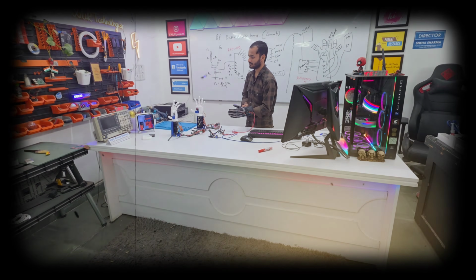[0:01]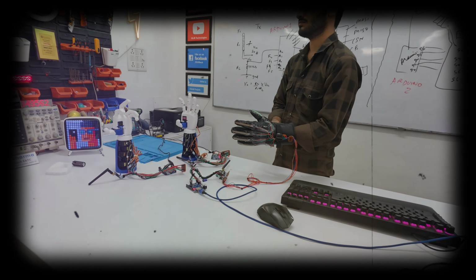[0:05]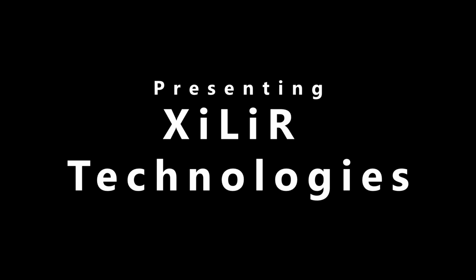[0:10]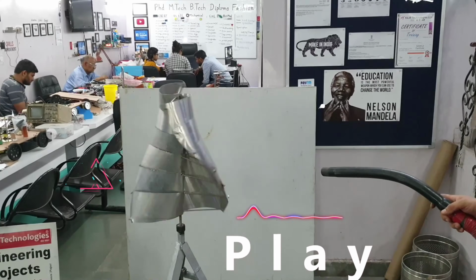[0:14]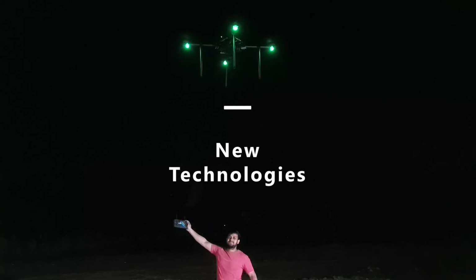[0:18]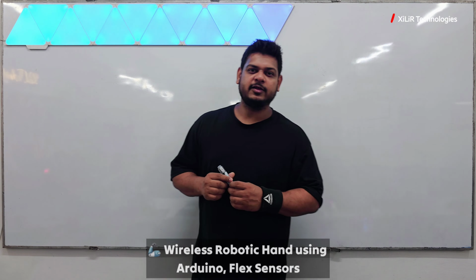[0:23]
Begin.
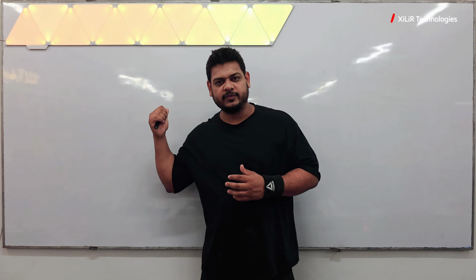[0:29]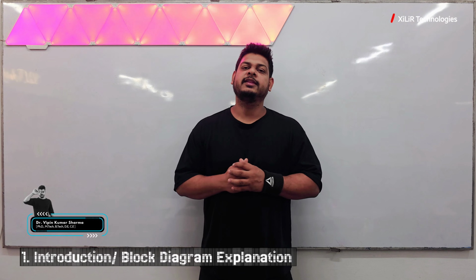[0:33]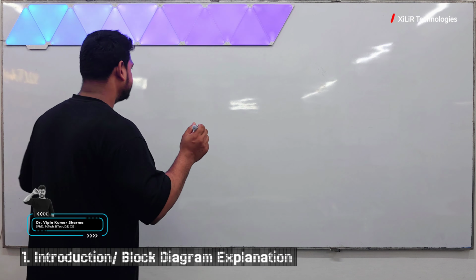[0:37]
Today we are going to demonstrate a project named Wireless Advanced Robotic Hand. I will explain the block diagram of the project, circuit diagram, component explanation, output of the project, and then the code. Now let's start with the block diagram.
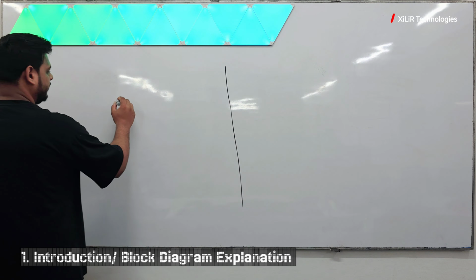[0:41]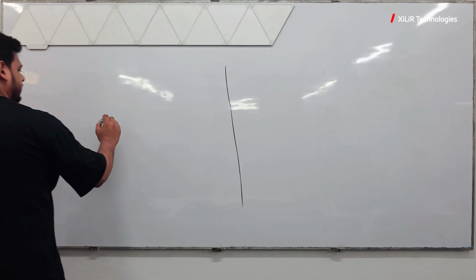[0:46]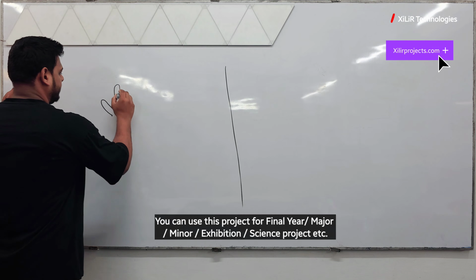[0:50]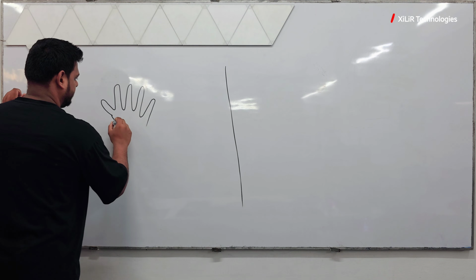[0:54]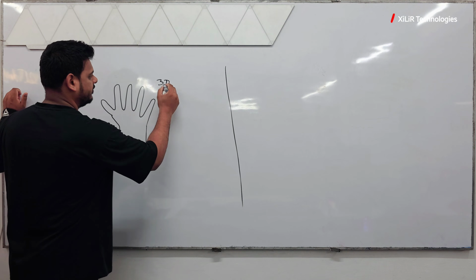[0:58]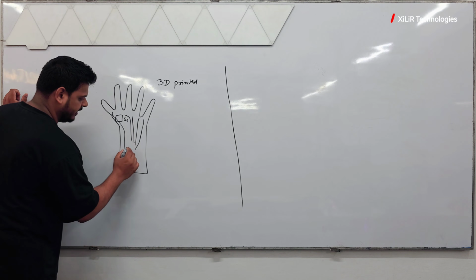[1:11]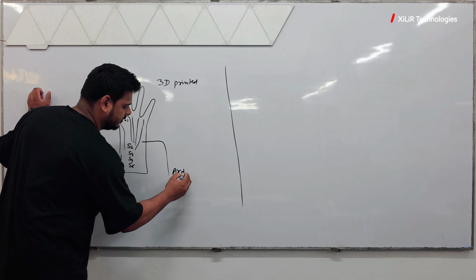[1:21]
In the block diagram, we have two parts here. One is your hand. One robotic hand will be there like this, and this will be 3D printed. One thumb movement motor will be here, servo motor number 1, and these will be connected with wires: 1, 2, 3, 4, 5, and servo motors here S2, S3, S4, and S5. This will be connected with an Arduino, these wires. You can use any other microcontroller.
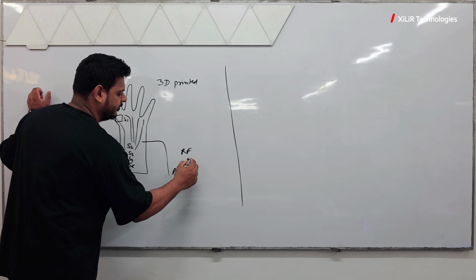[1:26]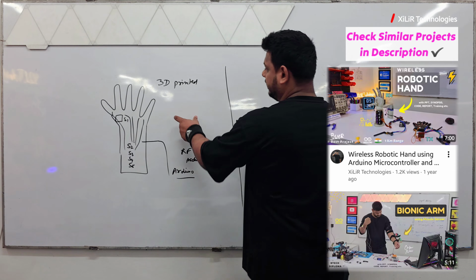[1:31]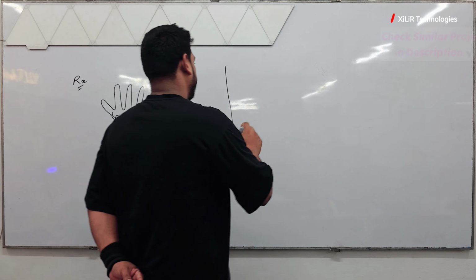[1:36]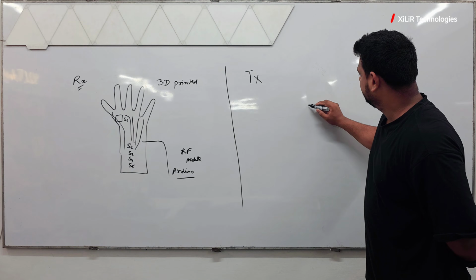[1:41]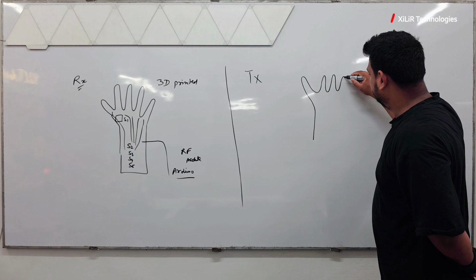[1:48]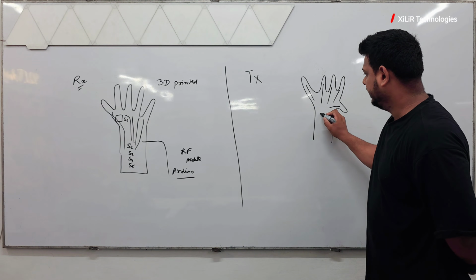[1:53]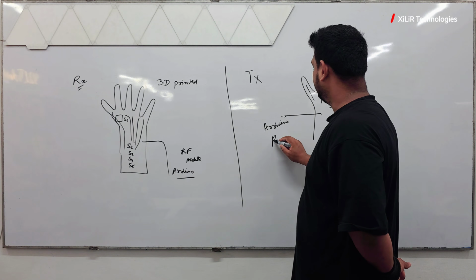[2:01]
An RF module will be used here. This side is the receiver part, so I'm writing RF here, and this is the transmitter part. Here we will have a flex sensor, also known as a bend sensor, and there will be gloves, and on the gloves they will be mounted: flex sensor 1, 2, 3, 4, 5. The output will be given to the Arduino microcontroller. All these will be connected to the Arduino, and again an RF module will be there.
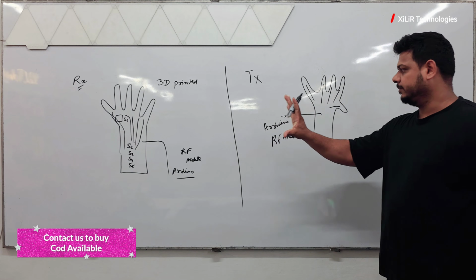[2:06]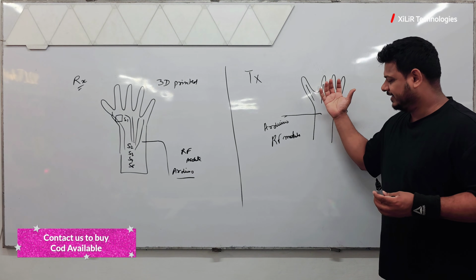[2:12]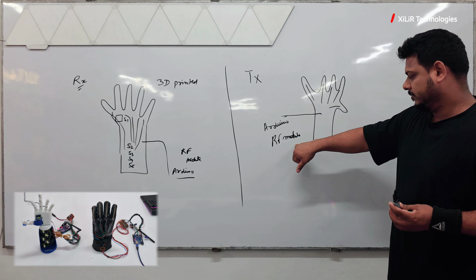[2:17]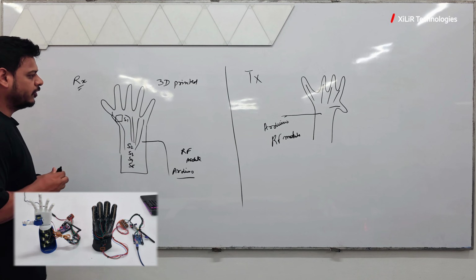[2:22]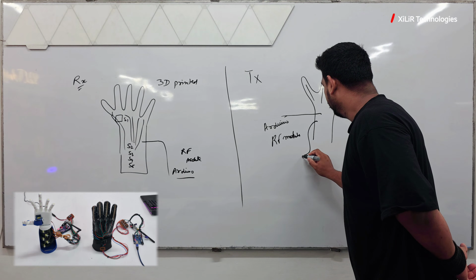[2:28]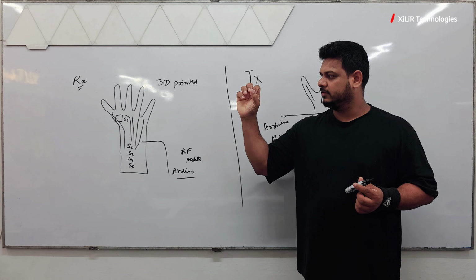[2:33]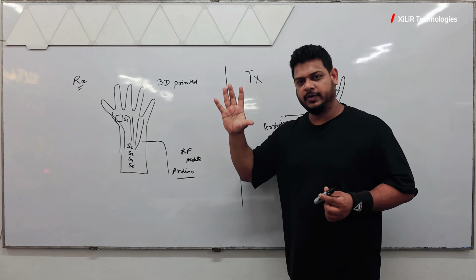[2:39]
Before the circuit diagram, let's get the basic idea. Here one hand will be moved like this. It will create some logic, like the bend sensor moving like this, and it goes to the Arduino microcontroller and RF module. We will receive the signal on the receiver side, and accordingly the motor will move. One more thing, a button has also been added here for thumb movement. One movement is like this, where all fingers move, and this is one of the movements. This is the block diagram of the project.
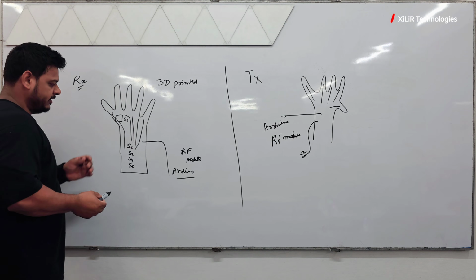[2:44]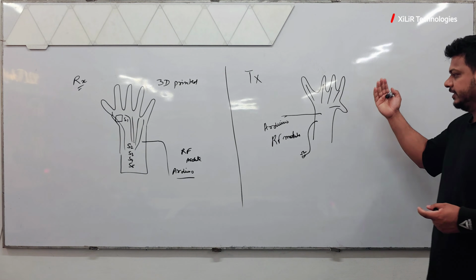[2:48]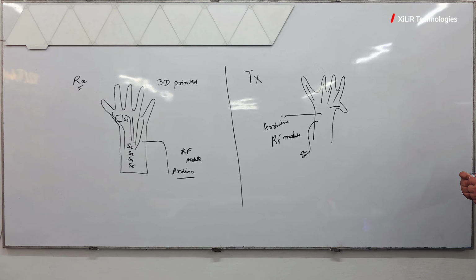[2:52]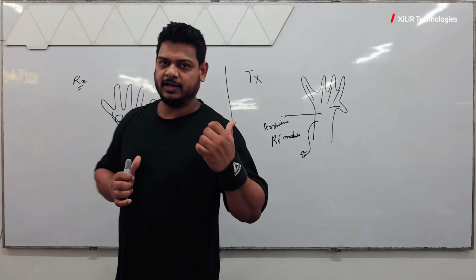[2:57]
These are the components connected: servo motors, then the 3D printed module, then the bend sensors, flex sensors. So these are the things. Now we will create the circuit diagram to show how things are connected together.
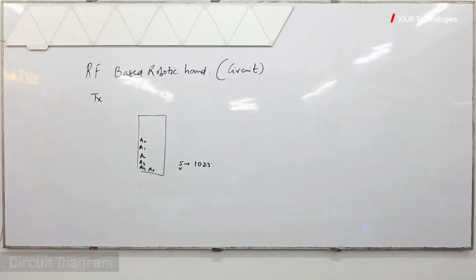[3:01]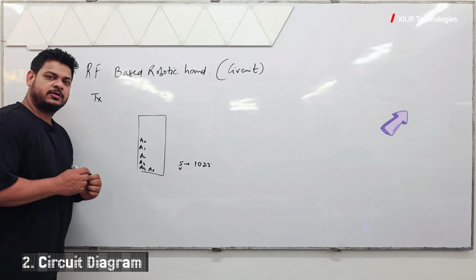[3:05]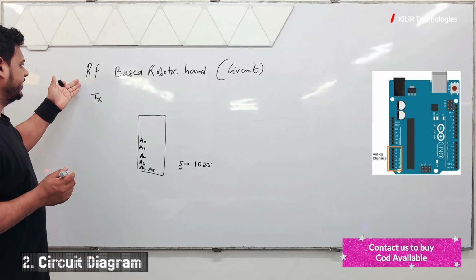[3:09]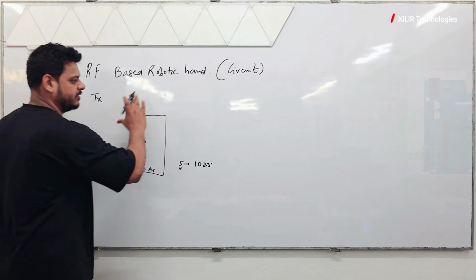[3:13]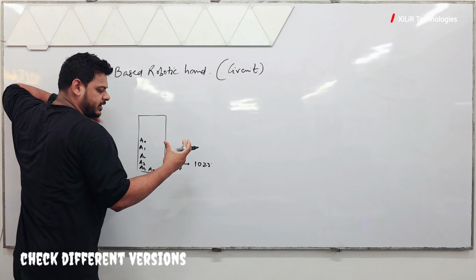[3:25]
Now let's see the circuit diagram of the project. I have written here RF based robotic hand circuit diagram. This is the transmitter part; on the receiver side we will make another diagram. This is your Arduino microcontroller. A0 to A5 are the ADC pins. ADC pin means if we give 5 volts, it will convert it into 1023 discrete values, because it's a 10-bit microcontroller.
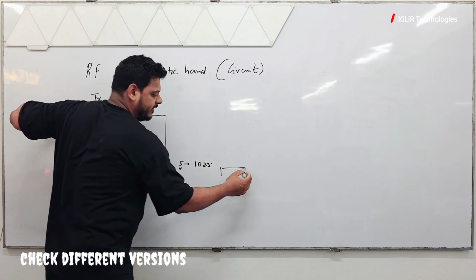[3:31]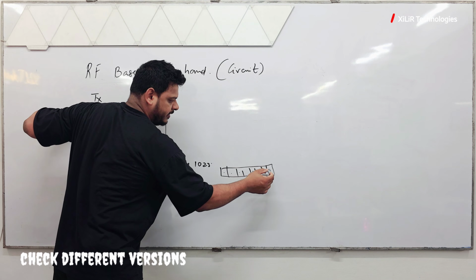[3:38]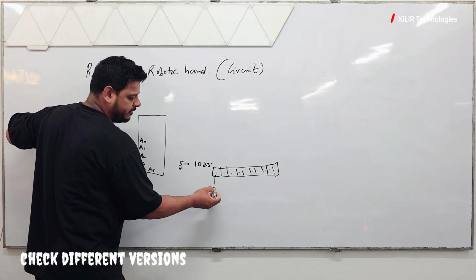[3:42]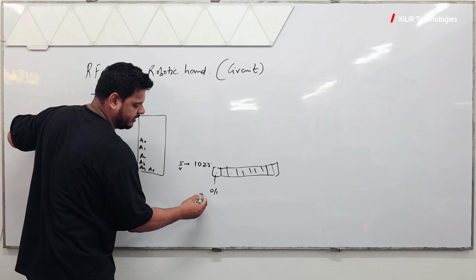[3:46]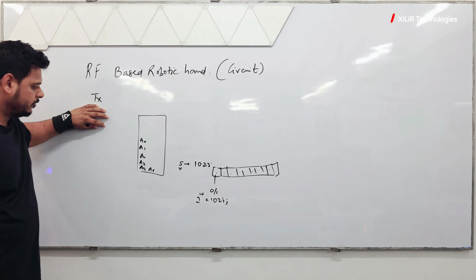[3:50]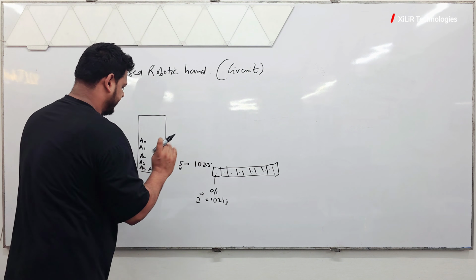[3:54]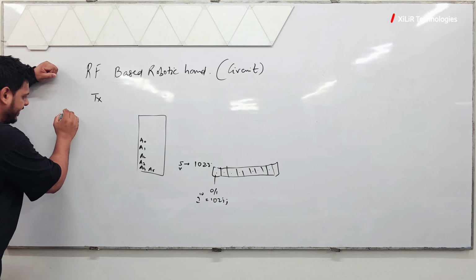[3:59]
10-bit means it has a register of 10 bits: 1, 2, 3, 4, 5, 6, 7, 8, 9, and 10. Every bit can hold two values, 0 or 1. So we have 10 bits, so 2 to the power 10 is 1024, that is 1023 if we include 0. Whatever voltage value you give here, it will be converted to this discrete value.
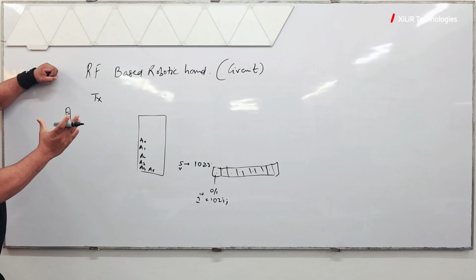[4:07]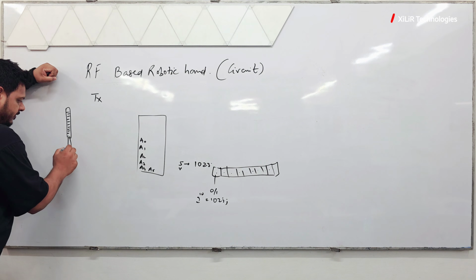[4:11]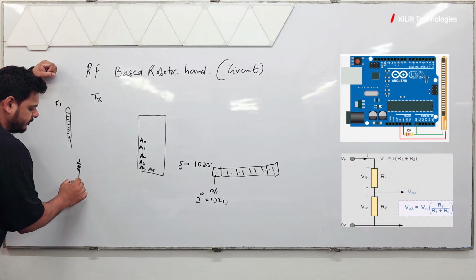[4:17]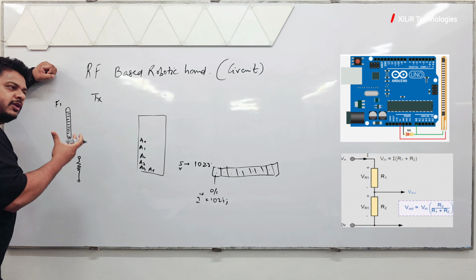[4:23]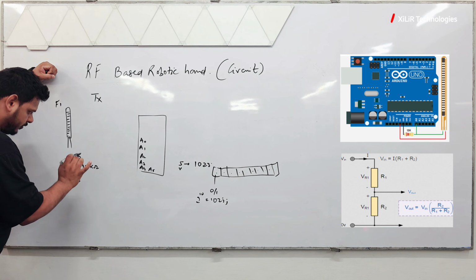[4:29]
We have a bend sensor here. This is one flex sensor I am drawing. This flex sensor is a changeable resistance, you can say a variable resistance. Then we have to connect one resistance to create a voltage between them, so it is also known as a voltage divider circuit. We have a 10 kilo resistance; you can use 1 kilo or 10 kilo here. Connect that resistance to this, and think of the flex sensor as a variable resistance. To this pin you can give 5 volts, and to this pin ground. Here will be the output, which will be connected to A0.
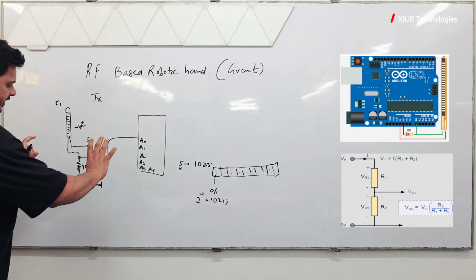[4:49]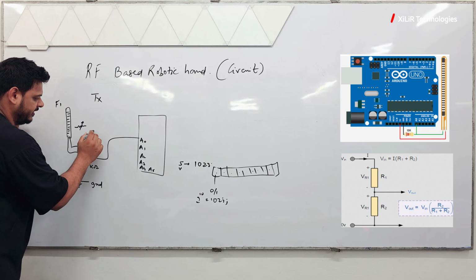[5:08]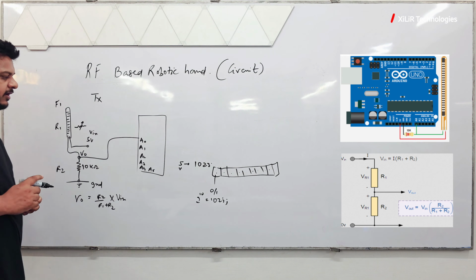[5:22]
Now what will happen if you bend this finger? This resistance will change, and the change in resistance will create a voltage variation here. The formula for it is like this: I am marking V0 and this is Vin, this is R2 and this is R1. So V0 equals R2 divided by R1 plus R2, into Vin. So a different voltage will be generated here.
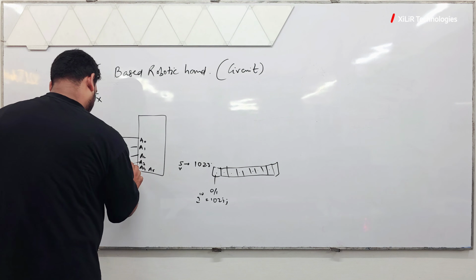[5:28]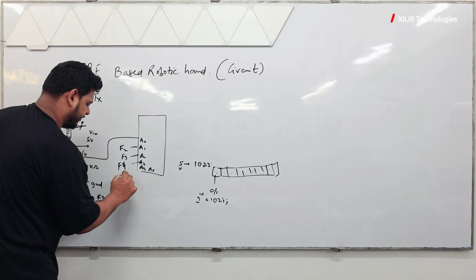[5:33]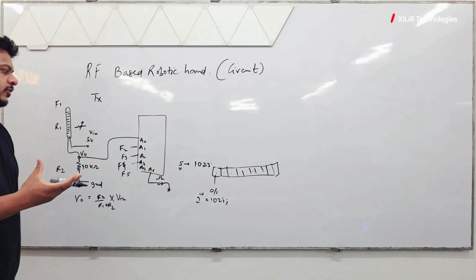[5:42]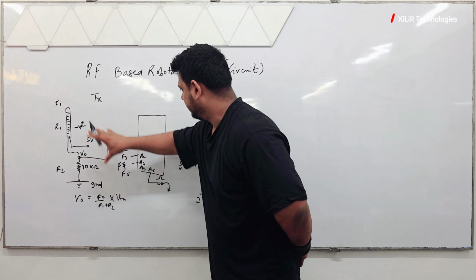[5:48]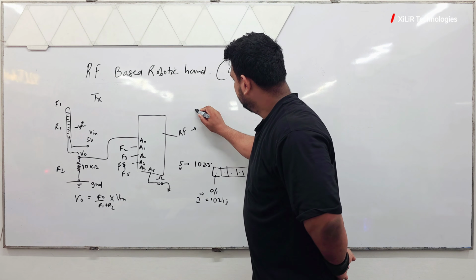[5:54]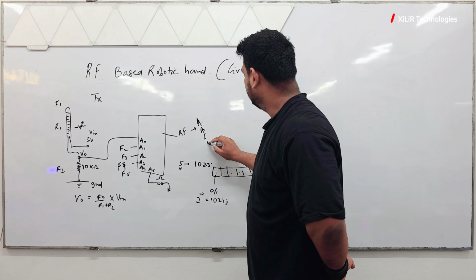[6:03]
In the same way there are five sensors here: F1, F2, F3, F4 and F5. One button is also used here. If you press that button, one more signal will be generated. Assume you bend one finger; through the RF module some commands will be sent, like A0, or just name them A, B, different commands. These commands will be received on the receiver side: A, B, C, D, E, F.
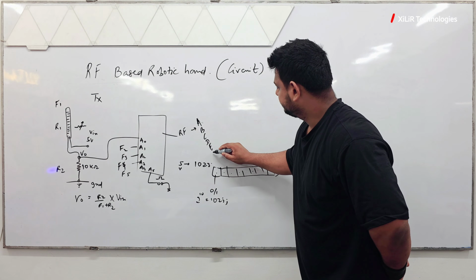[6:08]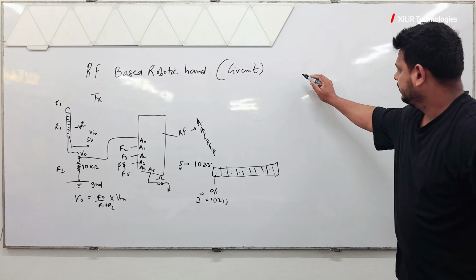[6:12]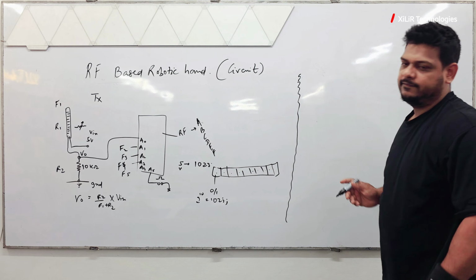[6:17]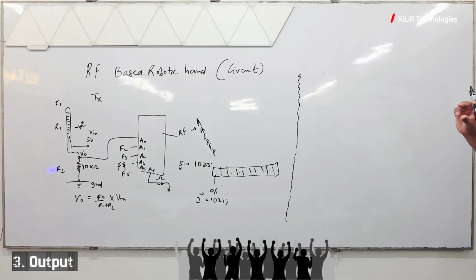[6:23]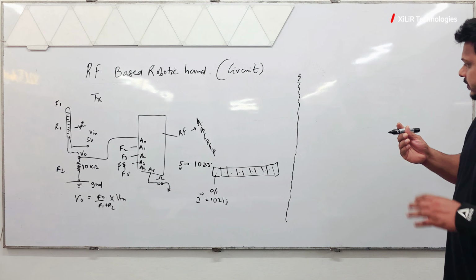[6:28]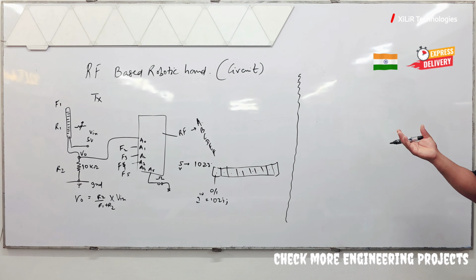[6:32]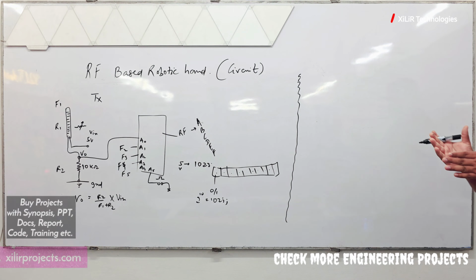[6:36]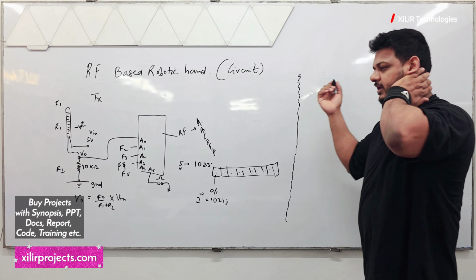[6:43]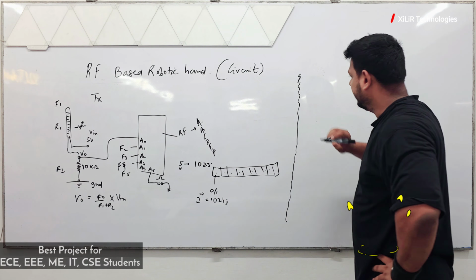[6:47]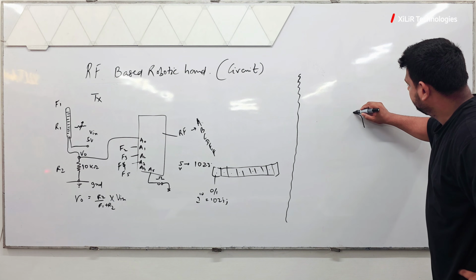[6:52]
Now on the receiver side we will have motors, which are servo motors. You can use small servo motors also, but I would prefer you use the bigger ones, so that you get better torque for bending the fingers. Otherwise they won't be able to do that task, and the gears will also slip. You can also use metal gear, which is better, but don't go with a very costly one. A normal one is fine; a 500 or 800 rupee motor is good enough. Here we have this 3D printed model, like this.
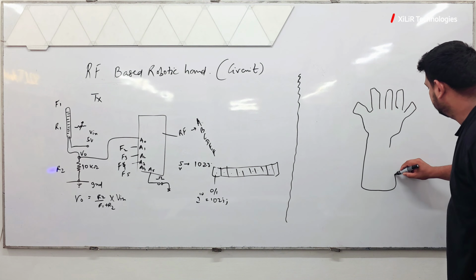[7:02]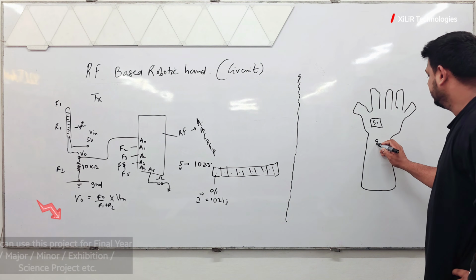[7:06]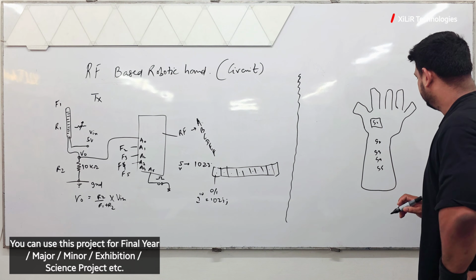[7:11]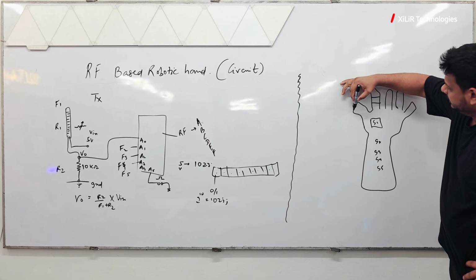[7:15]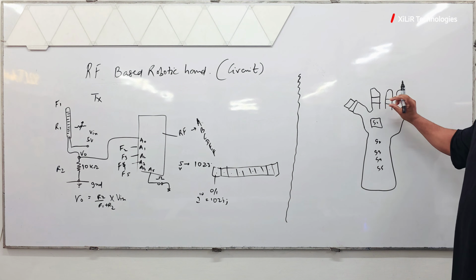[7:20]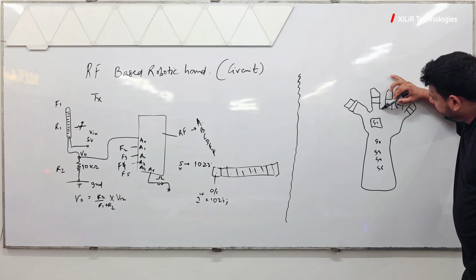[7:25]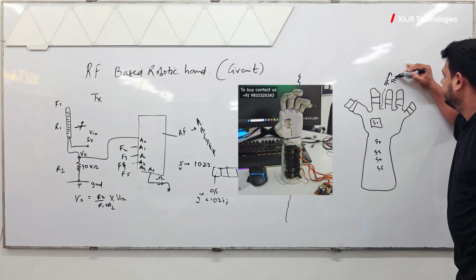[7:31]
Okay, and slot for servo motors S2, S3, S4, S5. Each finger has 3 modules for bending. 3 plastic modules are there again here. What we have to do is add one spring here, I can name it spring thread. So it will be stretched, like if you put the thread here, it will be stretched.
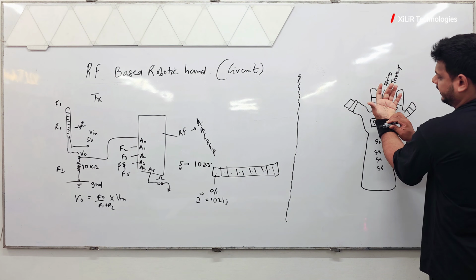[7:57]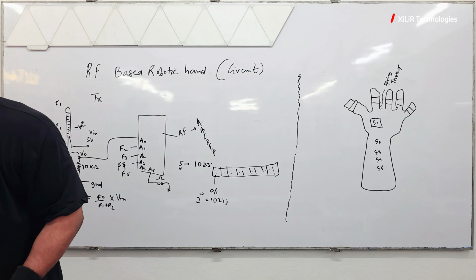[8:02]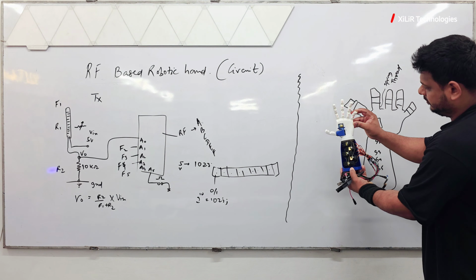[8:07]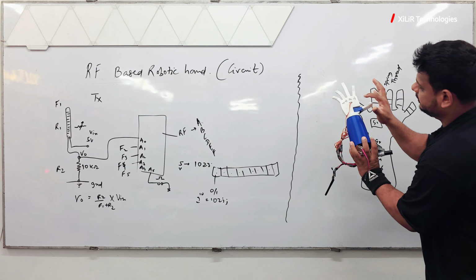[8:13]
Now you need one more thread, so the servo motor can move it. If you use the servo motor, it will bend like this, and it will bend like this. The spring will maintain this part. It will be straight, and this servo motor will be like this. This servo motor will be like this, and this servo motor will help like this. So this way. Let me show you. It will be like this. These motors will help in moving the fingers, and here the threads are the springy threads.
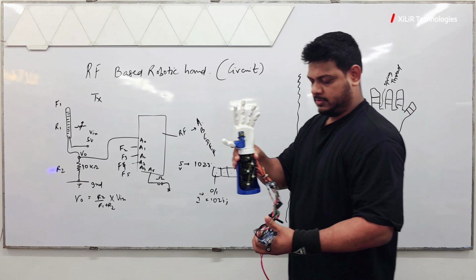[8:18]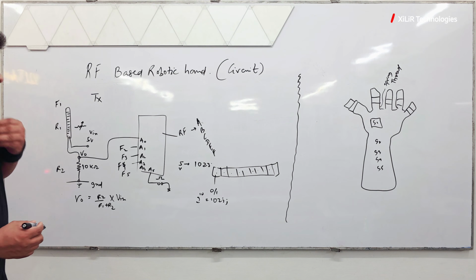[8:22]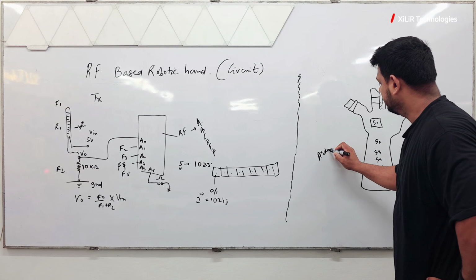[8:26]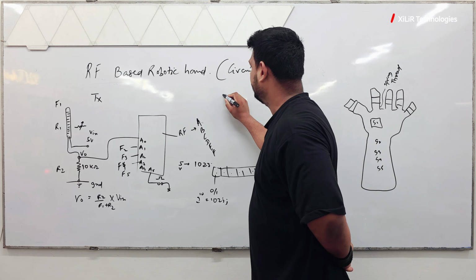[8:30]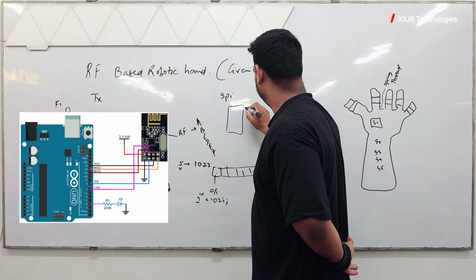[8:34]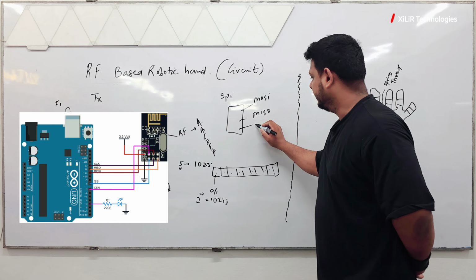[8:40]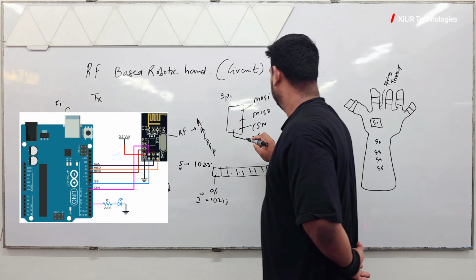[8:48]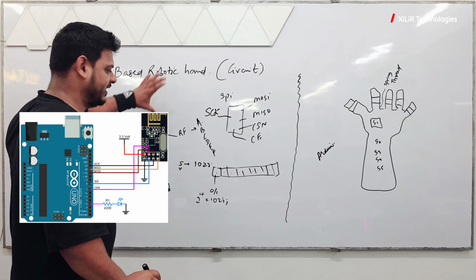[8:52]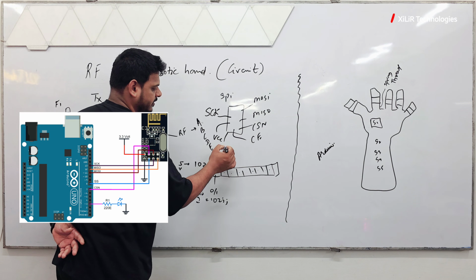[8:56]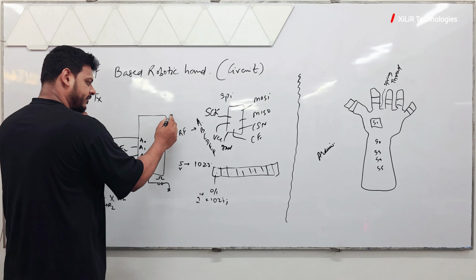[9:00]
Okay, so now let's see further. Here also Arduino is here, and NRF, remember, it will be connected through the SPI protocol. The NRF module has some connections: MOSI, MISO, then we have CSN, CE, SCK. I will add the picture. Then we have VCC and ground. So it's a complex one. You have to connect Arduino. Arduino has specific SPI pins here, so you have to connect it directly.
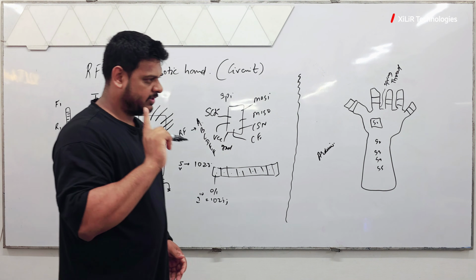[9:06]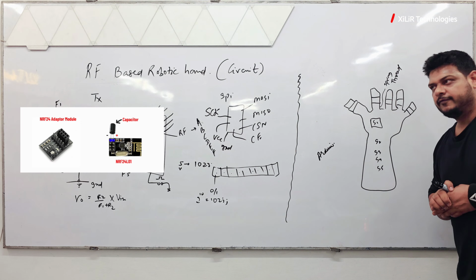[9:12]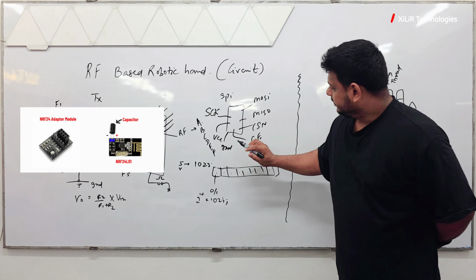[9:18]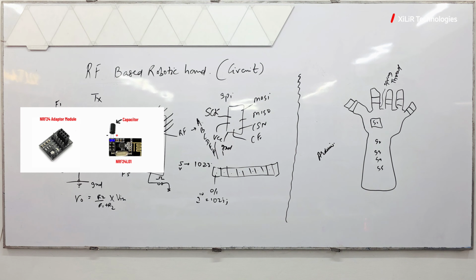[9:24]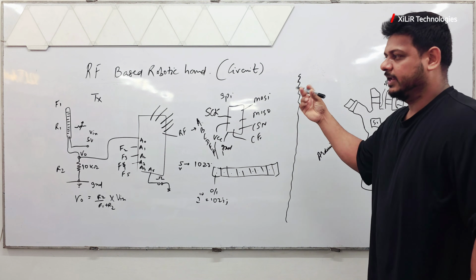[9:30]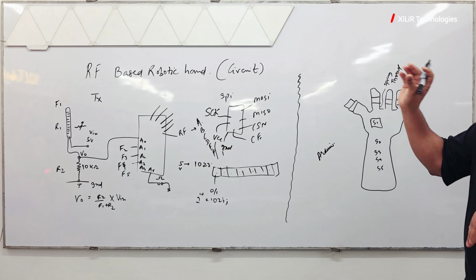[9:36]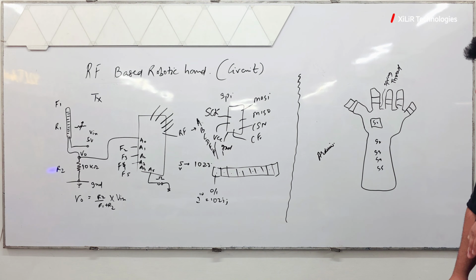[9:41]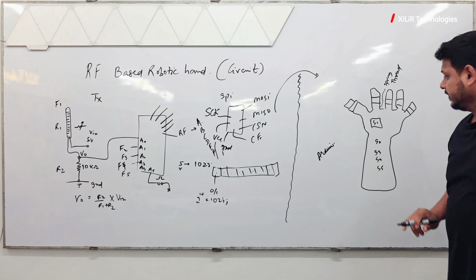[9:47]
And where you will fail, let me tell you, that is the important part. You have to give proper power supply to the module. You have to use a 10 microfarad or 47 microfarad or 1000 microfarad capacitor in between these. Remember this thing, this is a very important part. Otherwise it won't be stable and the signal won't be received. And use a similar pair. Don't use 100 meters and then 1 kilometer, different versions, when you are switching. Use the similar type. Buy from one place two similar modules, so that only then will they communicate with each other. Same copy paste here. Same thing. And then Arduino again.
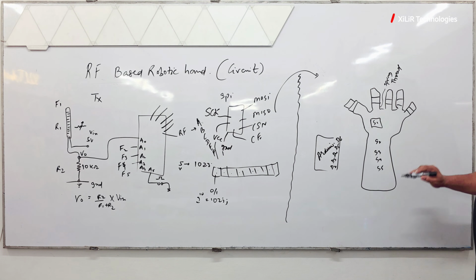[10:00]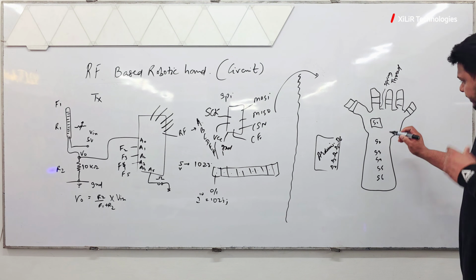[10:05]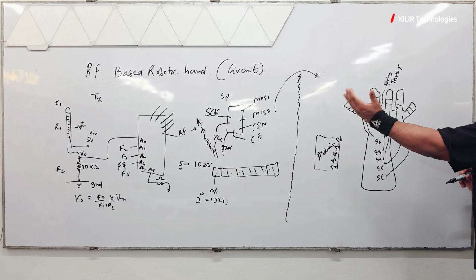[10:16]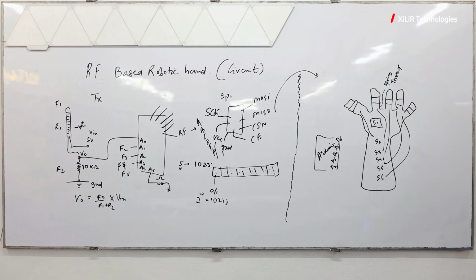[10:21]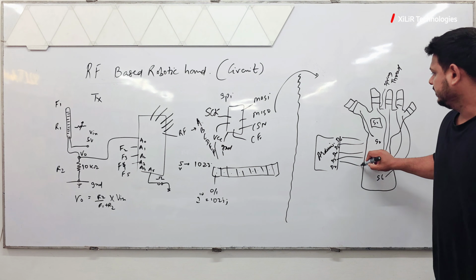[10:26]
From D2, D3, D4, D5, and D6, because here we have 6 servo motors: S1, S2, S3, S4, S5, S6. So this will control this finger. This will control this finger. This will control this finger. This thread I'm marking. And whenever we receive the signal, things will work. Okay, like this. And then let's connect like this. NRF on here.
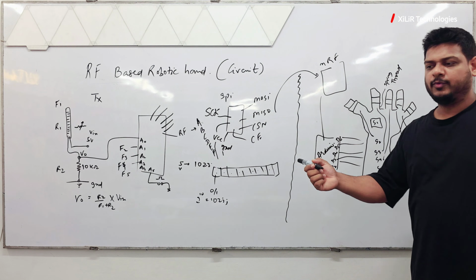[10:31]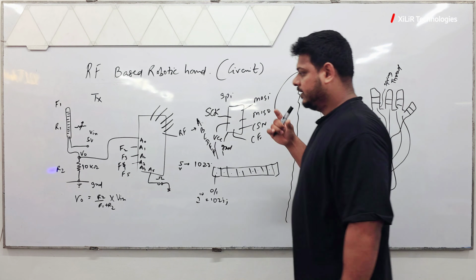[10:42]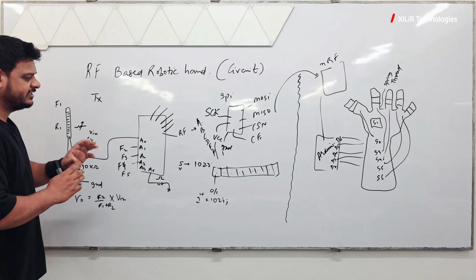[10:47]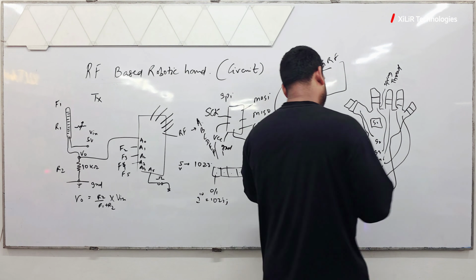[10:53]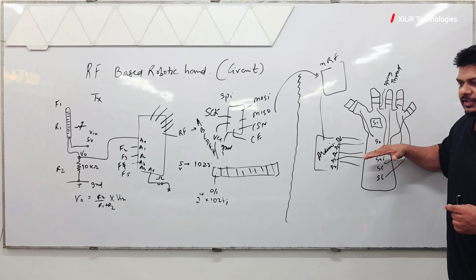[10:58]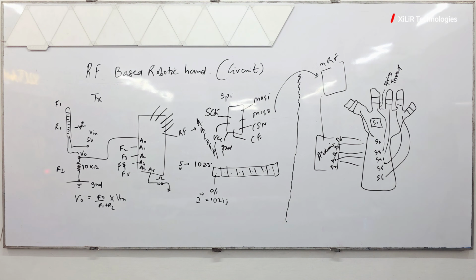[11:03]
NRF, RF module, Bluetooth, LoRaWAN module, Zigbee, any wireless module you can use. Now you know the concept of how to communicate with each other. And this is the important part: the flex sensor. You have to create one voltage divider circuit so that the voltage is divided. Through that voltage change we will receive a reading here, and through that we will know that the finger is pressed, and when the finger is pressed, we will receive output here. In the code we have written, if A is received, just rotate the servo motor 90 degrees. If we move like this, the finger will bend. Now everything is clear.
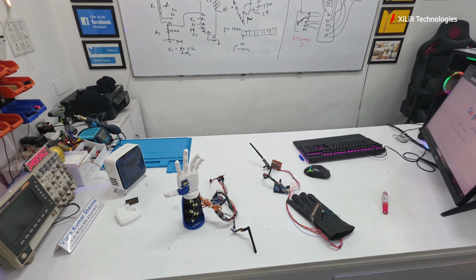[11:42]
I think yes, mostly. Connect the servo motor to a 5 volt stable power supply, 3 ampere minimum. Otherwise, these will not get proper power supply, and they won't work. Remember this important part. If you are using a 12 volt battery or 9 volt battery, then we need a voltage regulator circuit also. We can add that circuit also. Otherwise, you can use a direct adapter. If you want to make it portable, just use the battery and a power supply. That's it. So guys, now let's see how components are connected together.
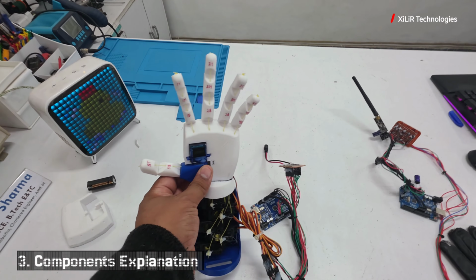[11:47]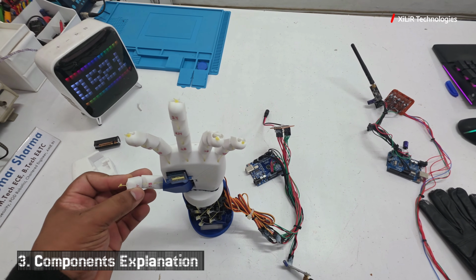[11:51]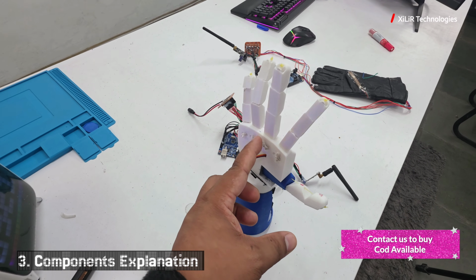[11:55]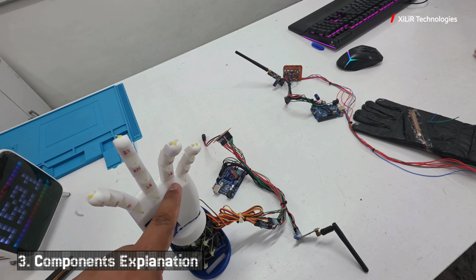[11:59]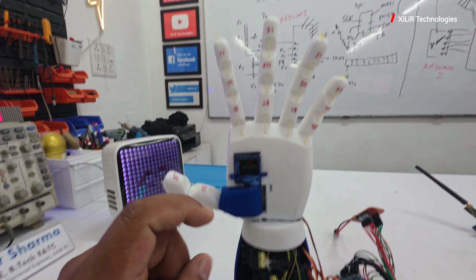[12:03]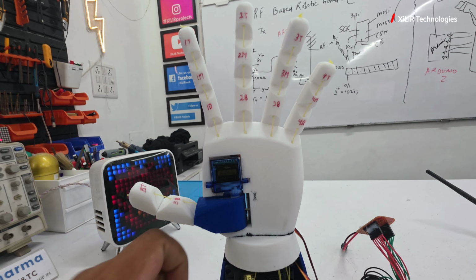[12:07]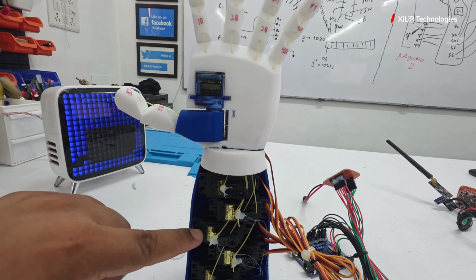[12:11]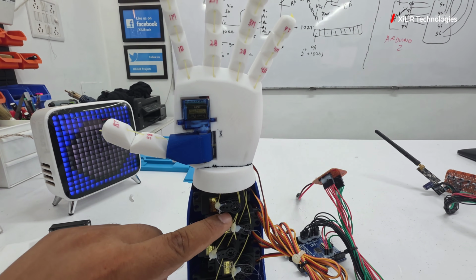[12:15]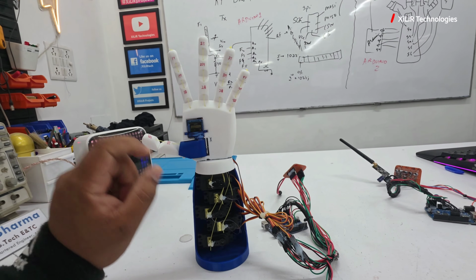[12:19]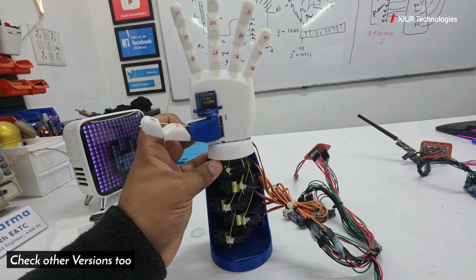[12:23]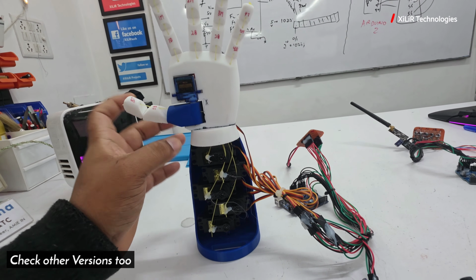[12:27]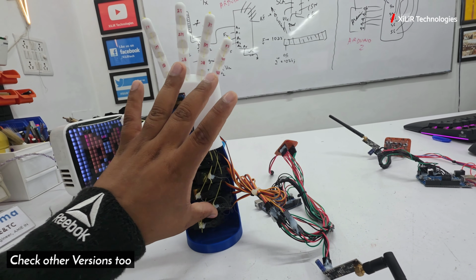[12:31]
So this is the 3D printed model. We have 3D printed this using our printer, and these are the flexible wires we have connected, and this is your nylon wire here, and then we have a servo motor here. This is also known as a 9G servo motor. Then we have these strong servo motors, MG995. You can use the other one also, but higher chances are that it will break, so use this one. This is the better one. Then this is for left right movement. And these are finger movements, which will be controlled by this pair, then this pair and this pair.
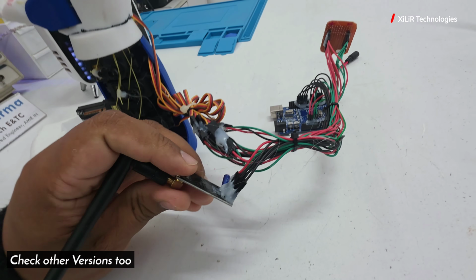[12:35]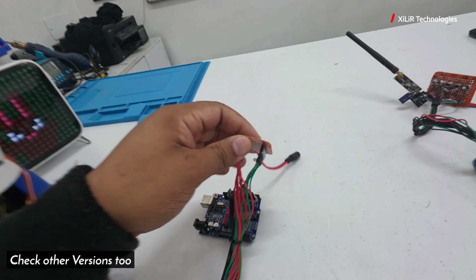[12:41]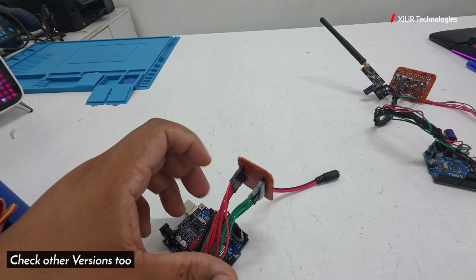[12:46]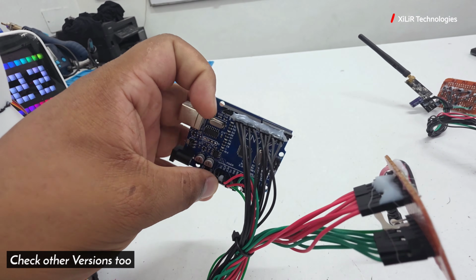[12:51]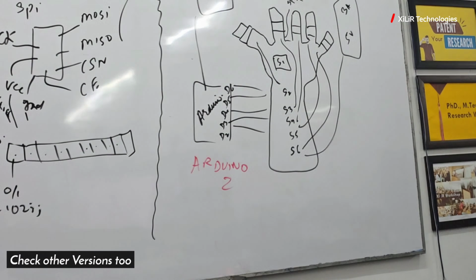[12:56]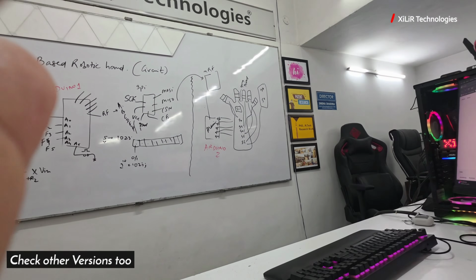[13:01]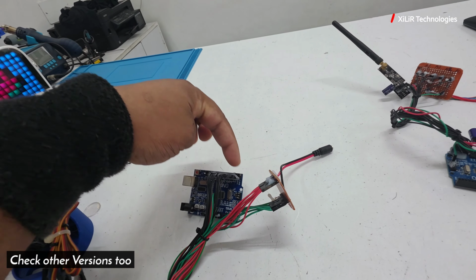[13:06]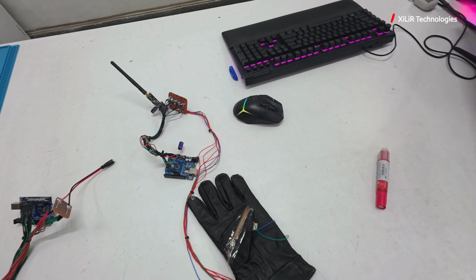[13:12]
Then we have the NRF module. This is known as the NRF module. Use a capacitor, otherwise you will face problems. This is a must. Then we have a power module here, so we will give 5 volt here. This 5 volt will be given to this power module. So this is just like a distribution network. Then we have the Arduino UNO microcontroller, through which power supply we have given, and these are the connections I explained: D2 to D6, then S1 to S6. So these servo motors are connected from these D2 pins to S1, like D2 to S1. Similarly, others.
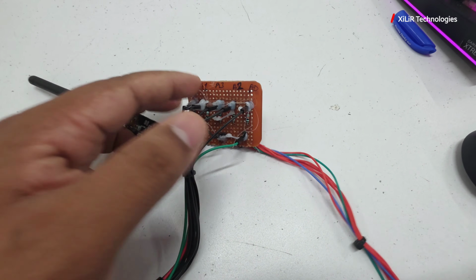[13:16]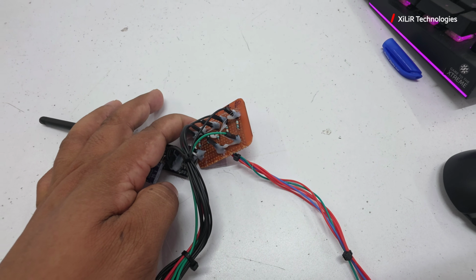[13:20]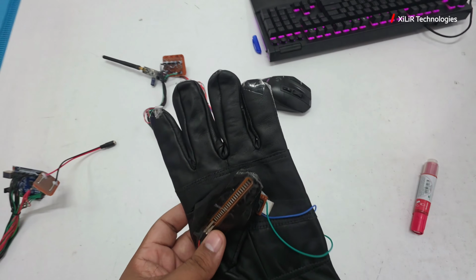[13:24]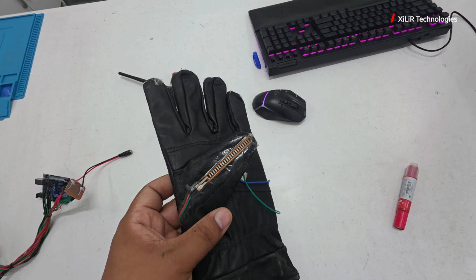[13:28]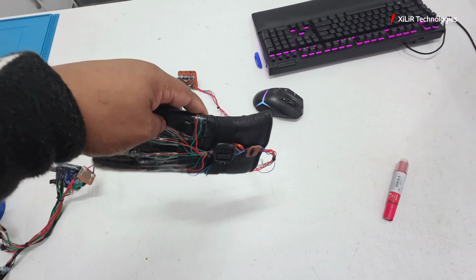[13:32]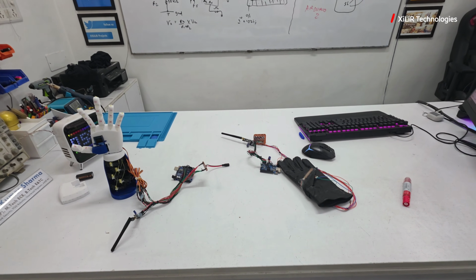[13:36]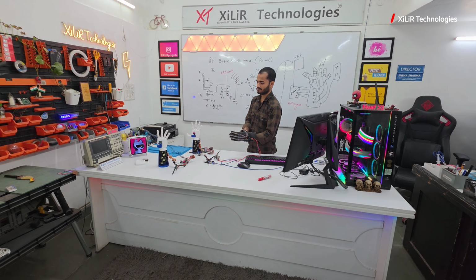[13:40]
This is the transmitter side. On the transmitter side, again we have the flex sensors with a 10 kilo ohm resistor with each flex sensor. You can see here. Then Arduino UNO microcontroller. Then this glove, and on the glove we have one button and flex sensors like this. So this is our complete project. Now we will see the output of this project, how it will work.